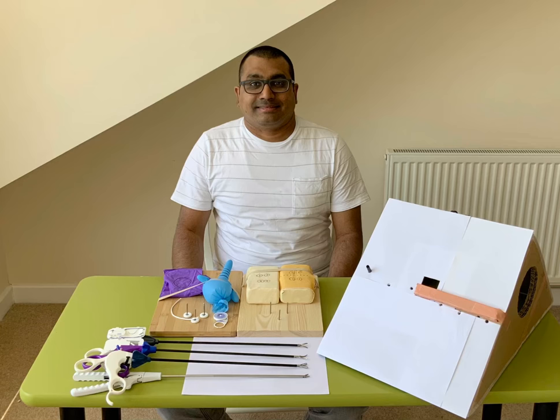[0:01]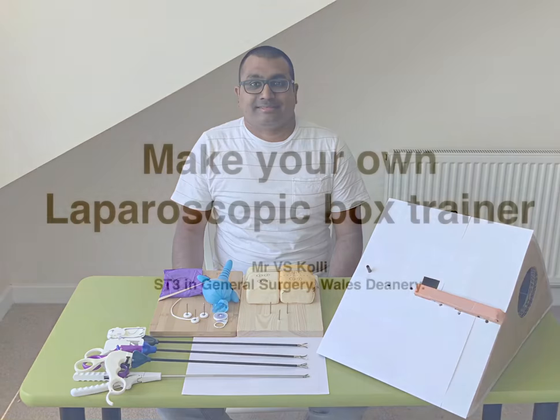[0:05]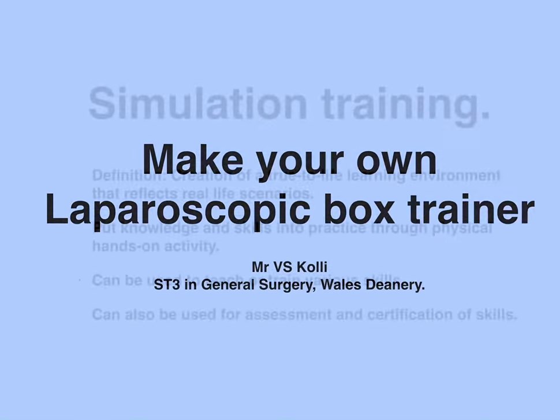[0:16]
Hi guys, my name is Satish Kole, one of the surgical registrars from Bangor in North Wales. Today I'm going to show you how to make your own laparoscopic box trainer from a cardboard box.
I would like to start with a brief introduction about simulation training. Simulation training can be defined as the creation of a true-to-life learning environment that reflects real-life scenarios. It gives trainees an opportunity to put their knowledge and skills into practice through physical hands-on activity. Simulation training can be used to learn new skills but also to improve on existing skills. It can also be used for the assessment and certification of skills acquired.
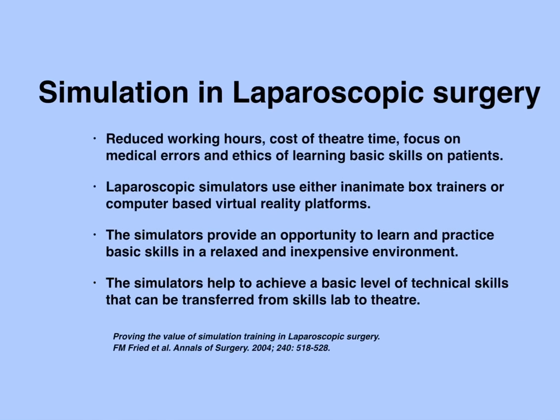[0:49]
Several factors led to the development of simulation in laparoscopic surgery. Reduced working hours, cost of theatre time, focus on medical errors, and the ethics of learning skills on patients are the most important factors. Laparoscopic simulators are essentially of two kinds. They either use inanimate box trainers or use computer-based virtual reality software. The simulators provide an opportunity for the trainees to learn and practice basic skills in a relaxed and inexpensive environment outside the operating room. They help the trainees achieve a basic level of technical skills that can then be transferred from the skills lab to the operating room.
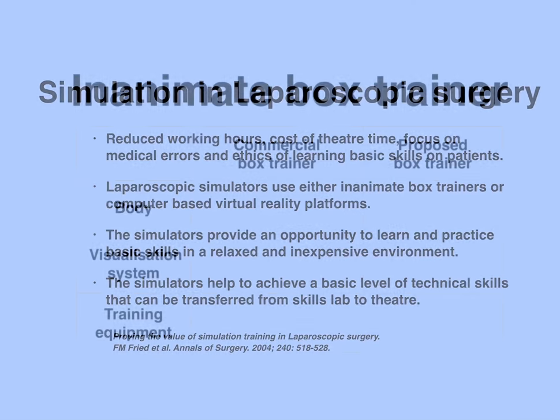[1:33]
An inanimate box trainer is essentially composed of three main parts: a body inside which various skills are practiced, a visualization system that captures images from inside the box and transfers to a monitor, and training equipment which includes laparoscopic instruments and other material.
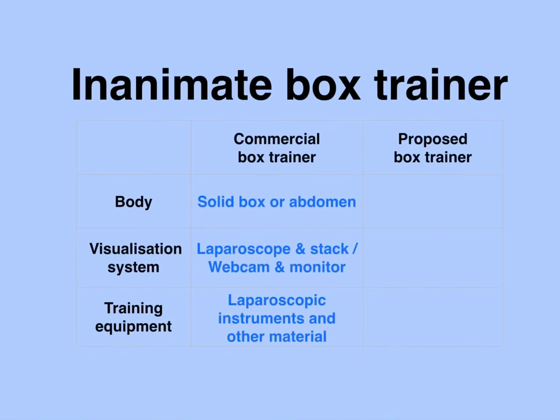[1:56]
Laparoscopic box trainers that are available on the market have a body of various shapes and sizes. Some have a solid box that looks like a cube, whilst others have a body that looks exactly like an abdomen, with a soft cover or anterior abdominal wall through which various ports can be inserted for practice. The visualization system can be composed of a laparoscope very similar to that used in theatres, along with a stack, whilst other trainers have a webcam that can then be connected to a monitor. The training equipment includes laparoscopic instruments and various other materials as is required for the skills being practiced.
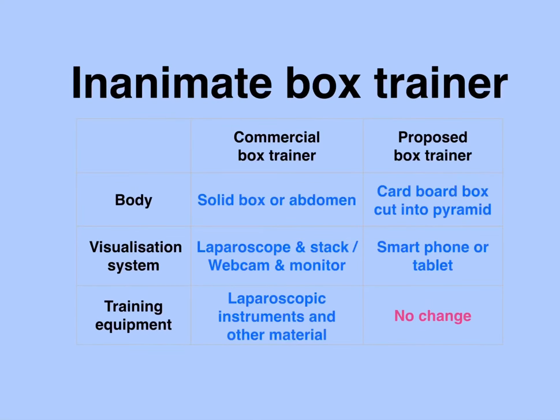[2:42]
The body of the laparoscopic box trainer that is being proposed in this video is essentially made of cardboard. A simple cardboard box is divided into two pyramids, one of which is shaped into a box trainer. A smartphone or a tablet acts as a visualization system and may be connected to a bigger screen through an HDMI cable or through Wi-Fi. There is no change in the training equipment required, and it essentially includes all the laparoscopic instruments and other materials that are required for the various skills.
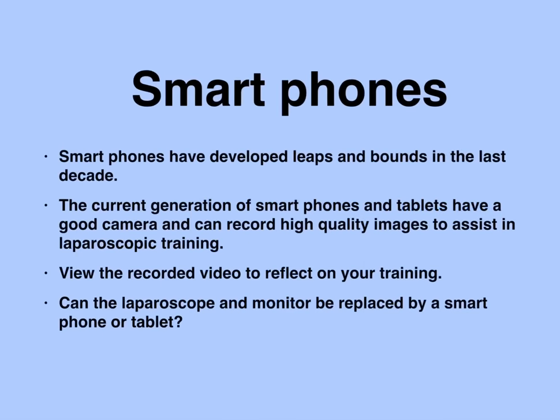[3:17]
Smartphones have developed leaps and bounds in the last decade or so. The current generation of smartphones and tablets have a high-definition camera capable of recording good quality images and videos. Trainees can record videos of their practice and then review those videos to reflect on their training. So essentially, smartphones can replace all visualization systems currently used in commercial box trainers.
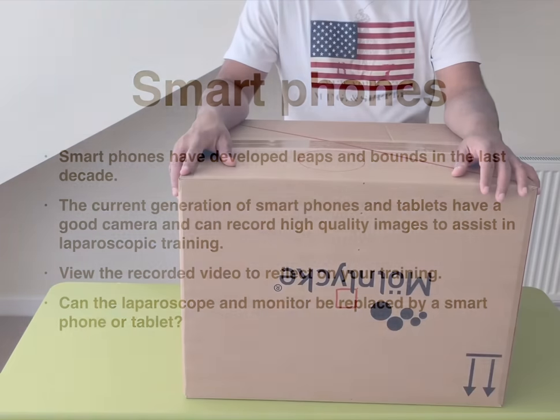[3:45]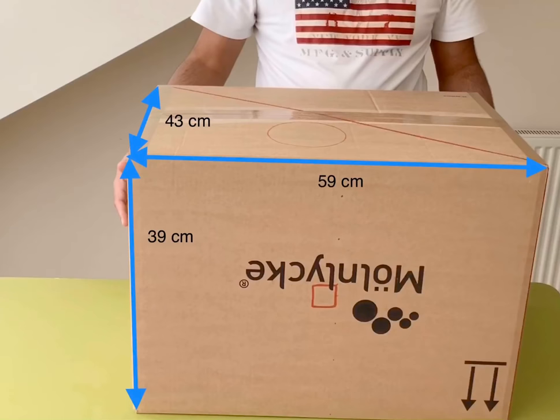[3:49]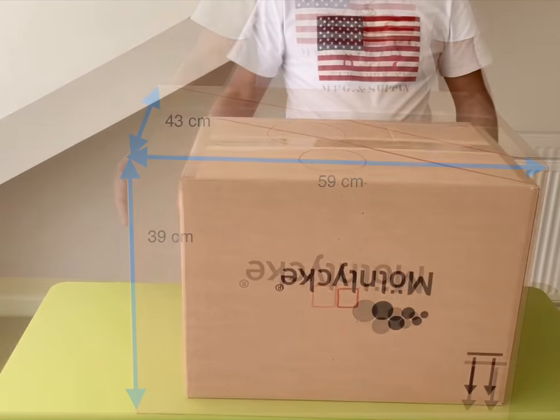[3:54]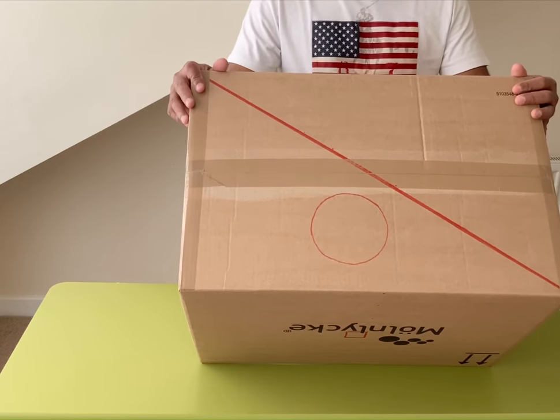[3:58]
So let's crack on, guys. I've got a thick cardboard box here measuring 59 by 43 by 39 centimeters, and we are going to cut this box along the red lines into two pyramids.
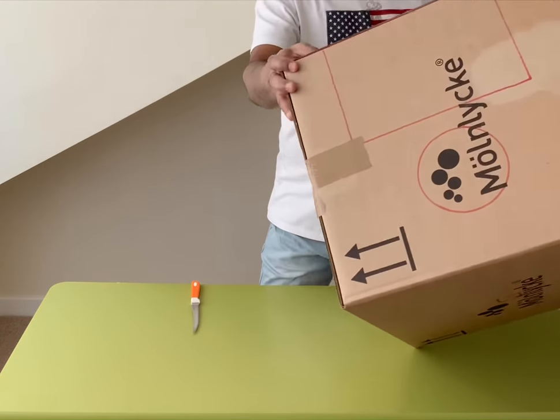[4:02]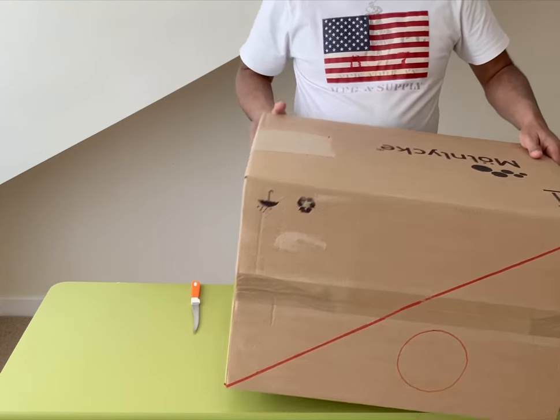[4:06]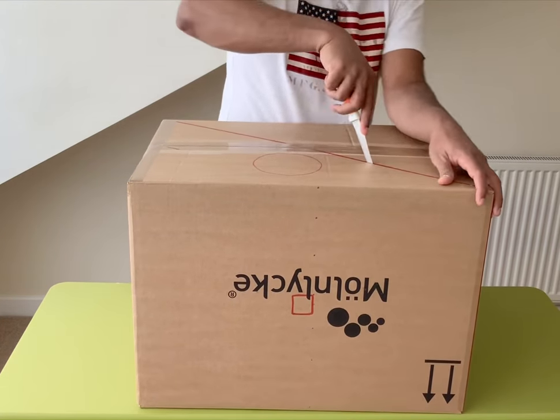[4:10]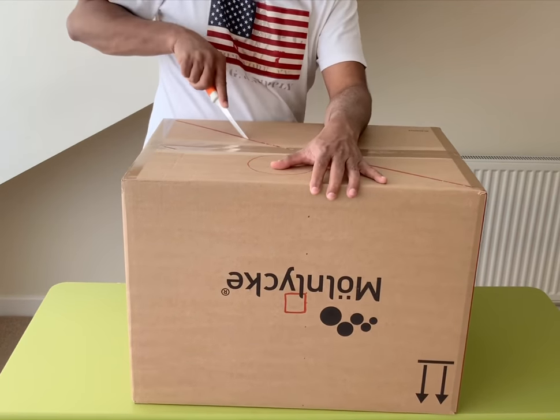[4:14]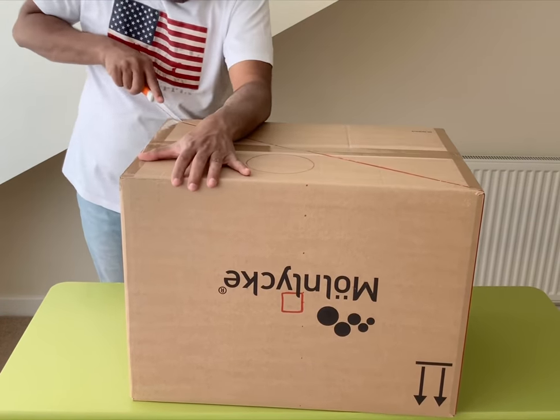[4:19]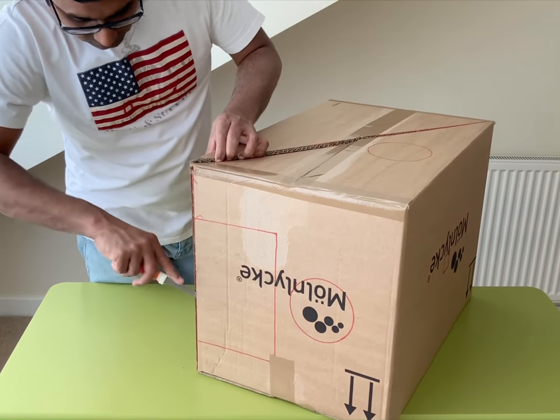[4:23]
Just a word of caution, guys, we're going to use a very sharp knife here to cut the cardboard box, and at places it is quite difficult to cut it, so please be careful and don't hurt yourself. And if you have any children in the household, make sure they're well away from you.
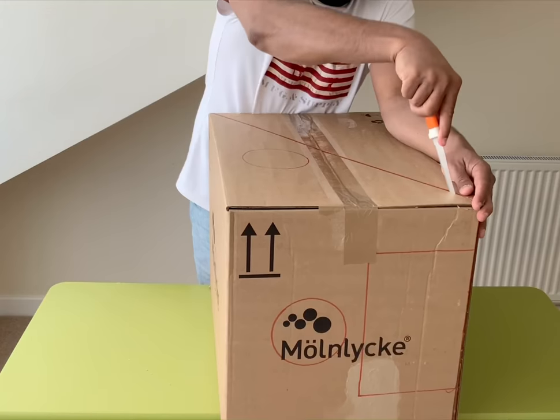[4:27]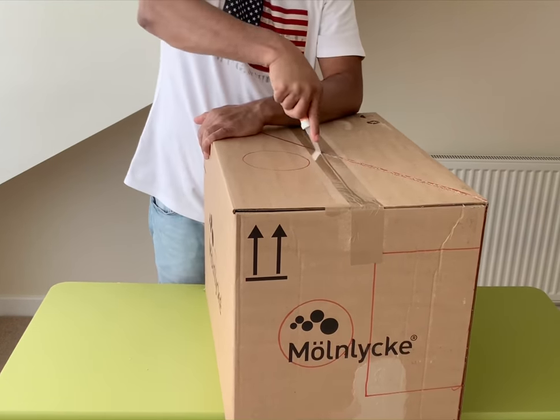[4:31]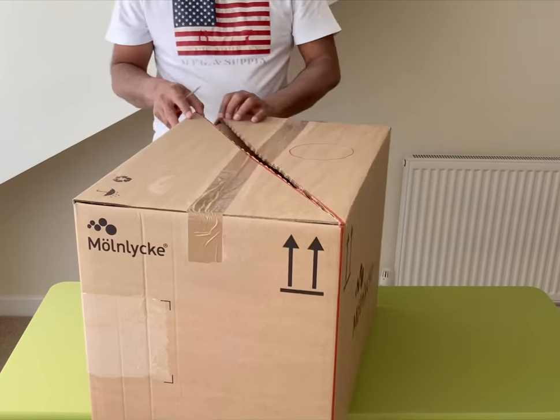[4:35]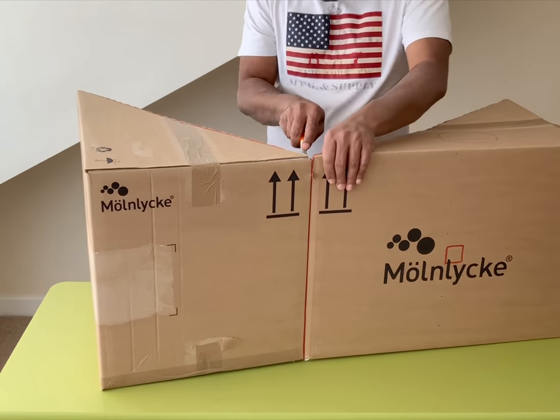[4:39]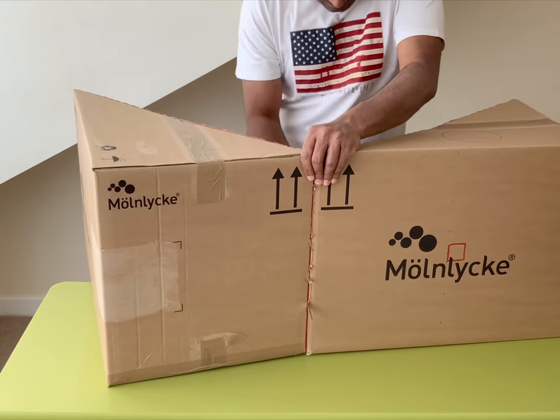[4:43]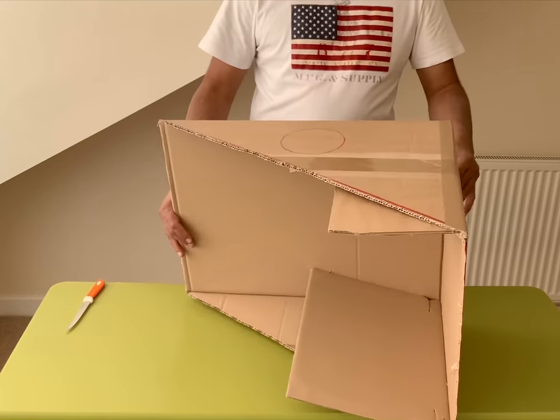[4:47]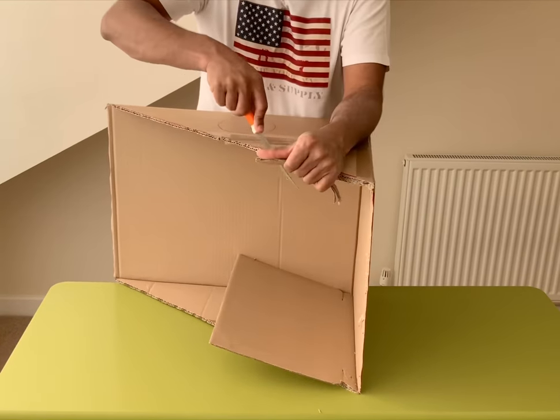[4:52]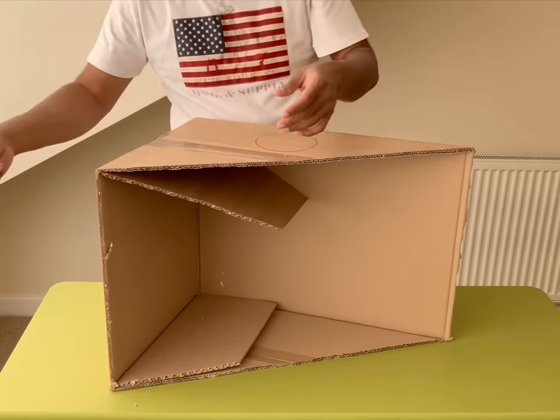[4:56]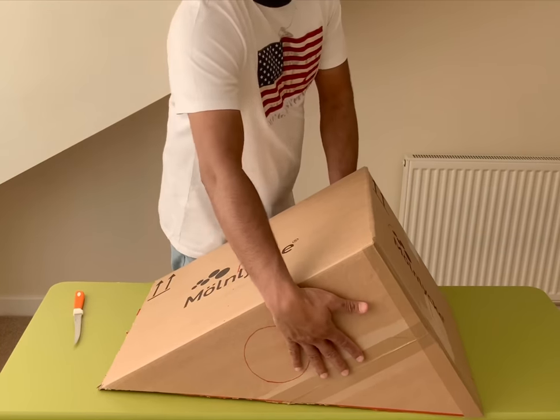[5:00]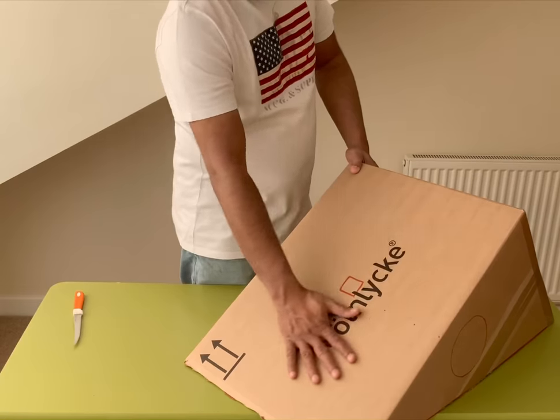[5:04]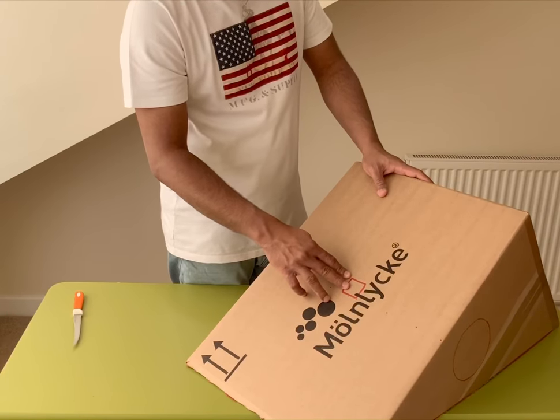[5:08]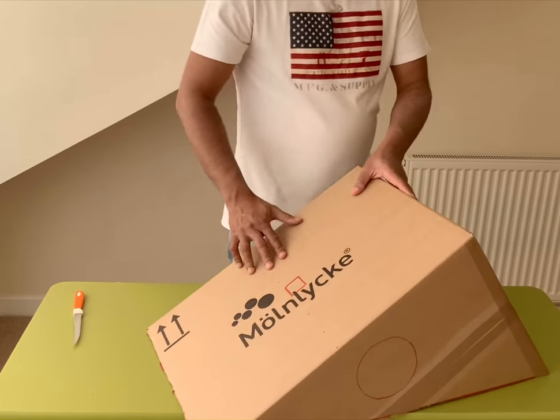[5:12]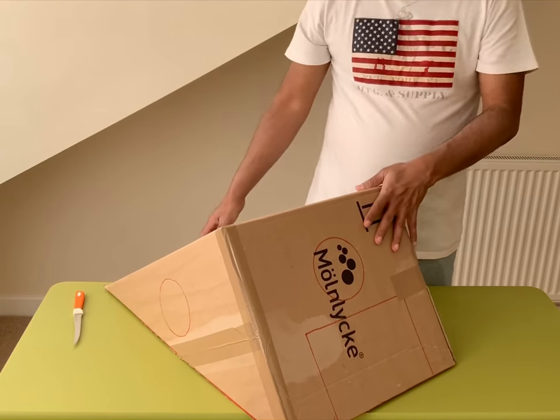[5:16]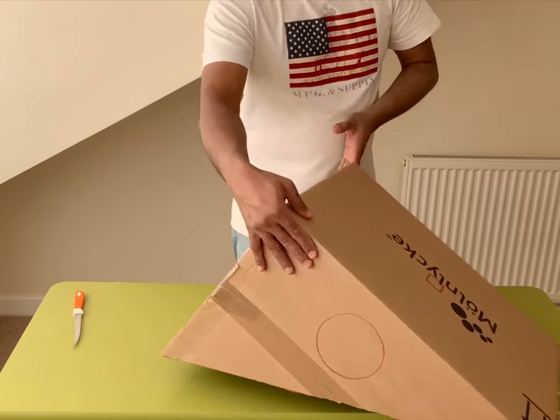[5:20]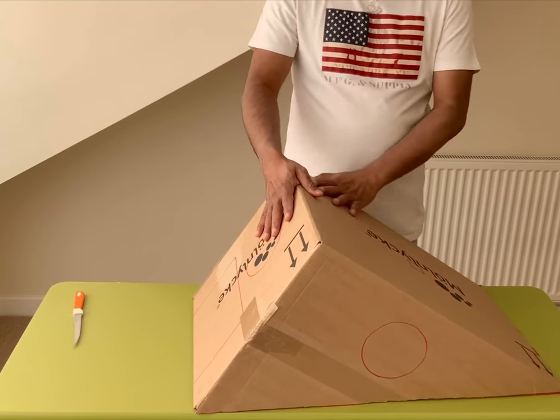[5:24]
We'll end up with a pyramid like this, with two surfaces forming the roof and two sides. One of the surfaces forming the roof we are going to use as a work surface, and we'll cut out a window to slot in the camera of a smartphone or an iPad or a tablet. On the other surface of the roof, we'll cut out windows for light entry. We'll also cut out windows on the sides for light entry, but also to use our hands to maneuver objects inside the box.
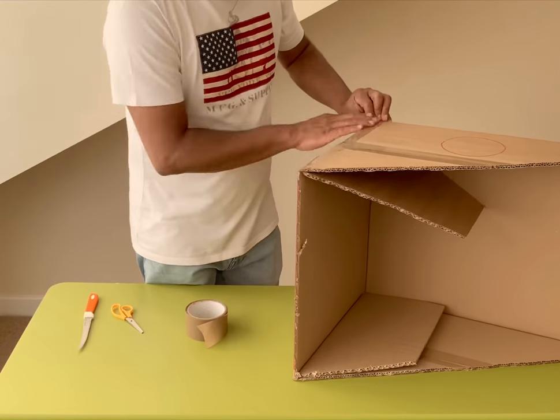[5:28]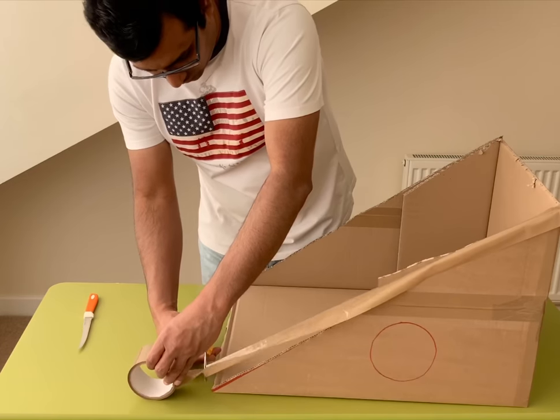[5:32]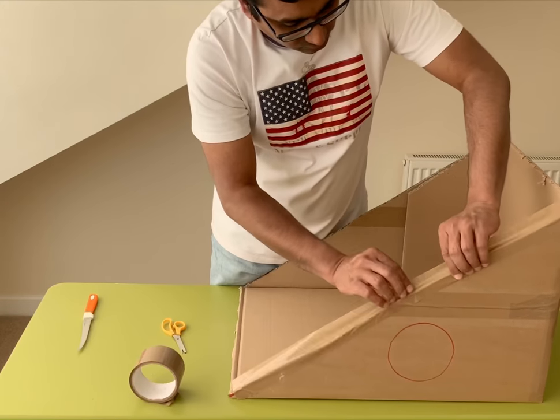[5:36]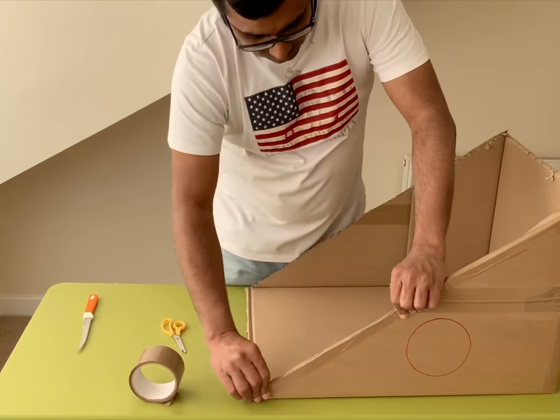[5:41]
I'm securing all the loose ends of the box and also the base of the pyramid with the tape so that the box is stronger and stable.
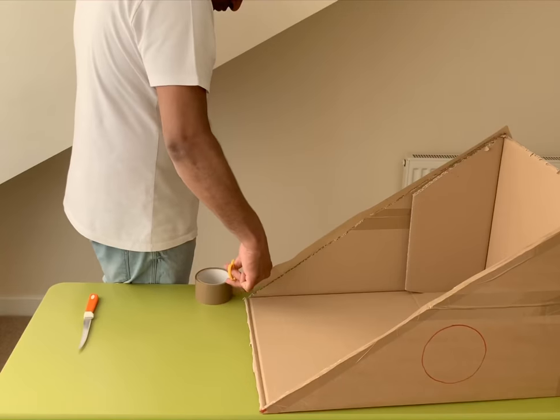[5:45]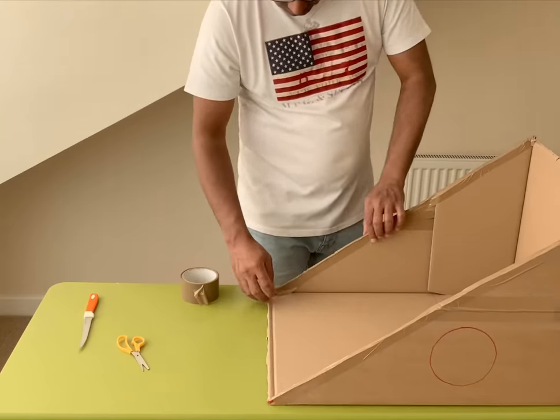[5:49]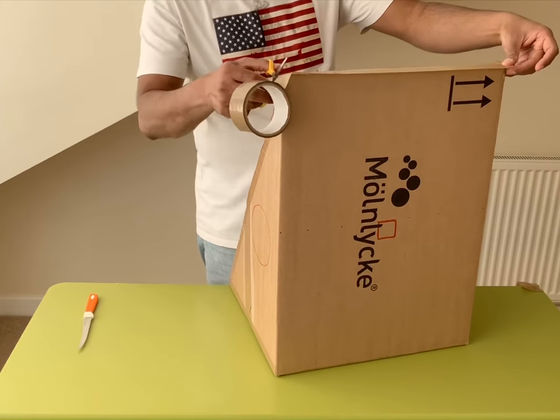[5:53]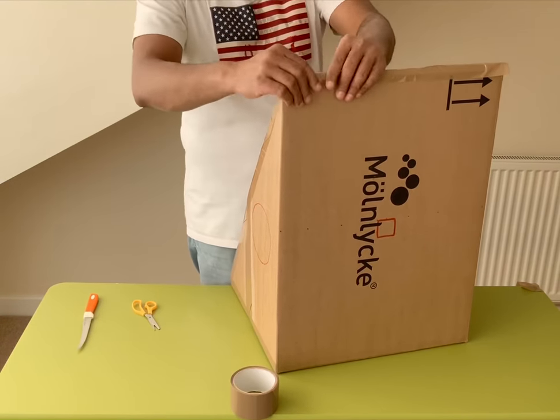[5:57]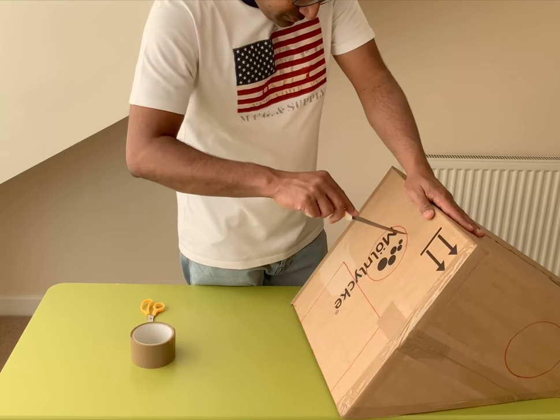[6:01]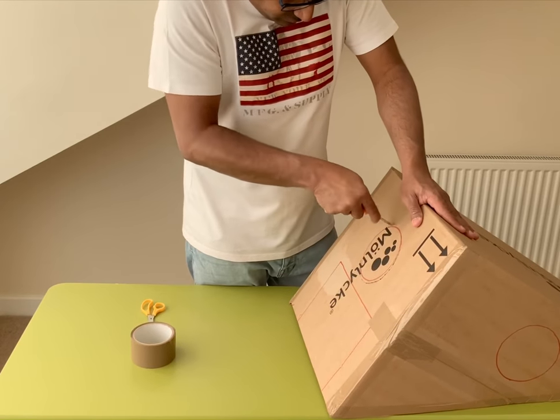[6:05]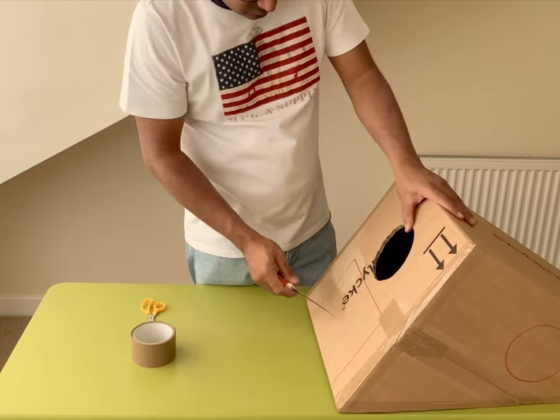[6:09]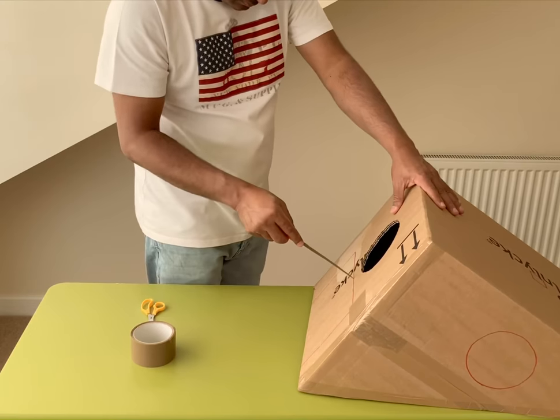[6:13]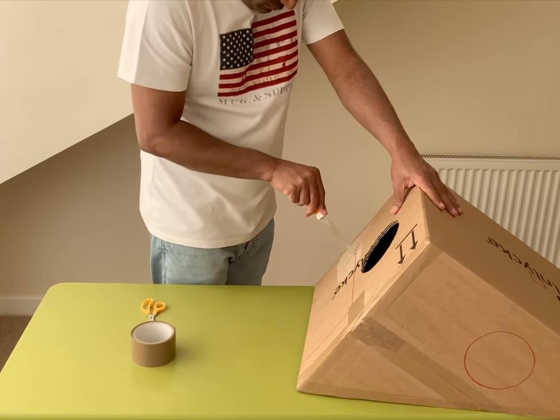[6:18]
If you are wondering as to why I have cut a round window followed by a rectangular window, please be patient. It will be obvious by the end of the video.
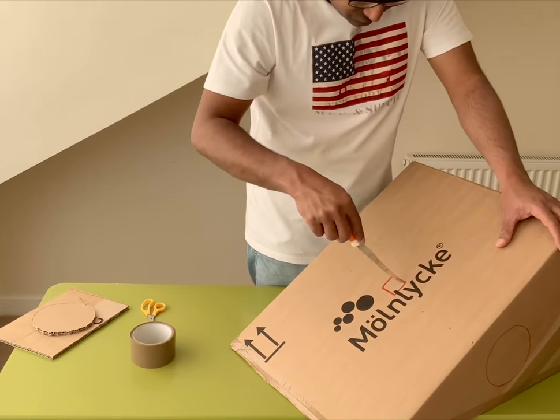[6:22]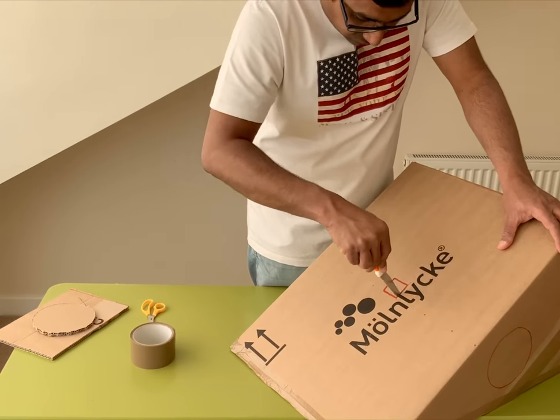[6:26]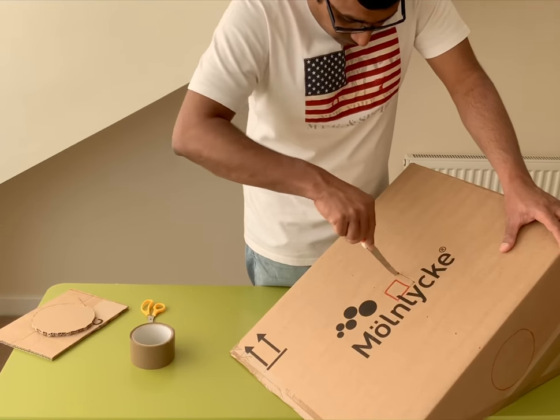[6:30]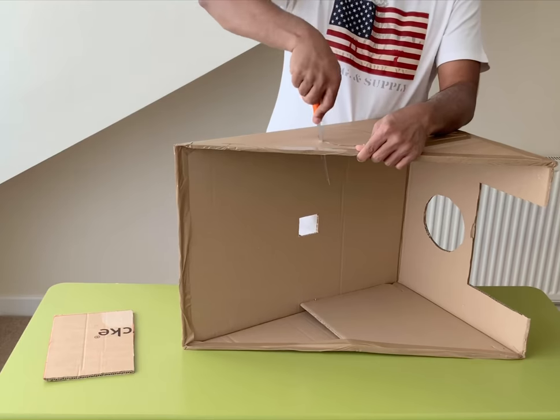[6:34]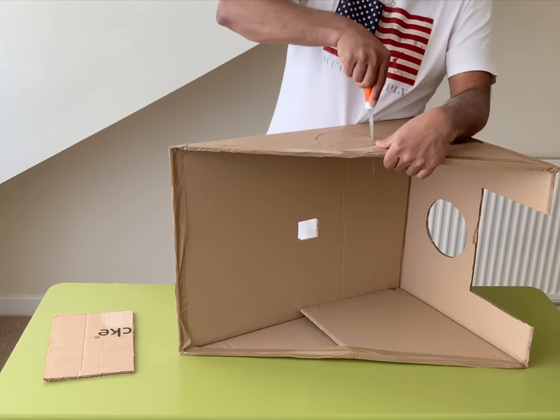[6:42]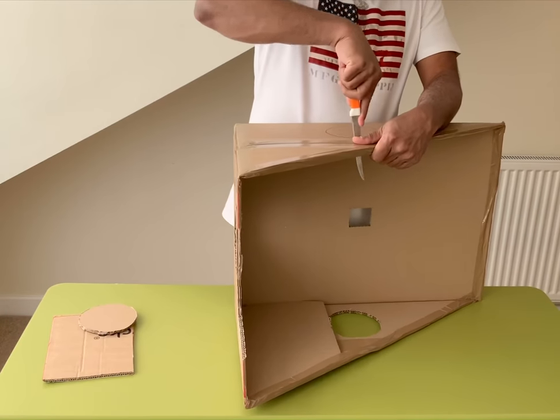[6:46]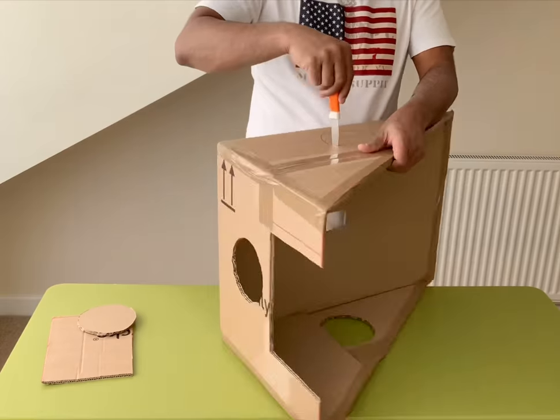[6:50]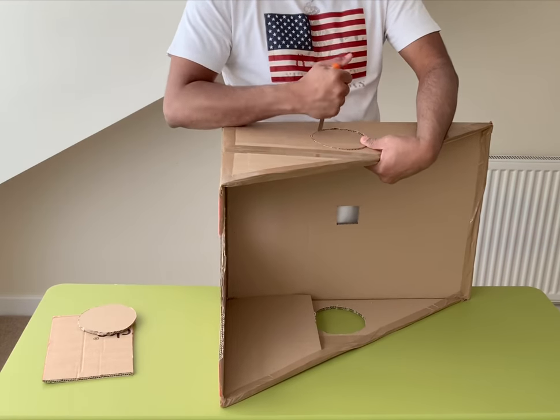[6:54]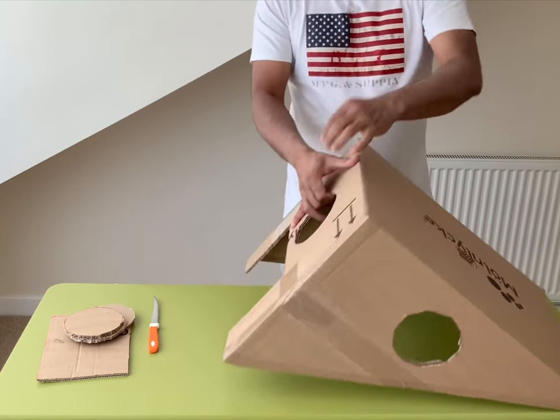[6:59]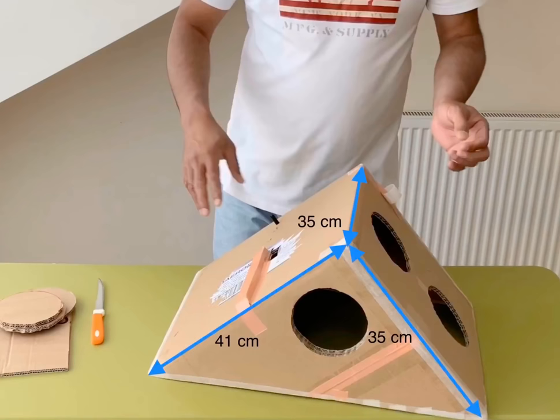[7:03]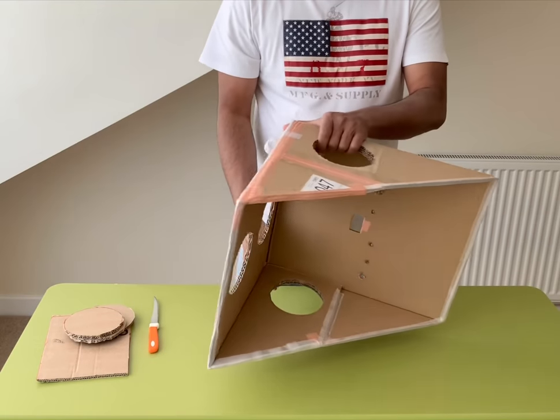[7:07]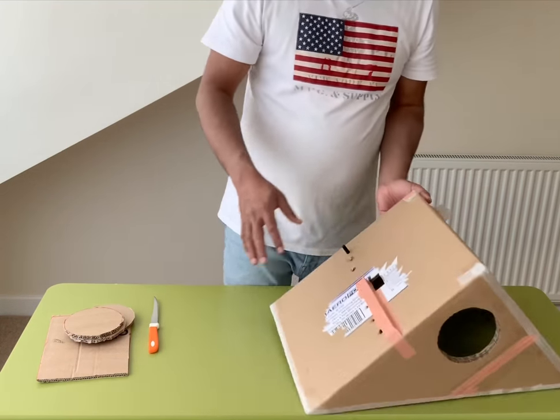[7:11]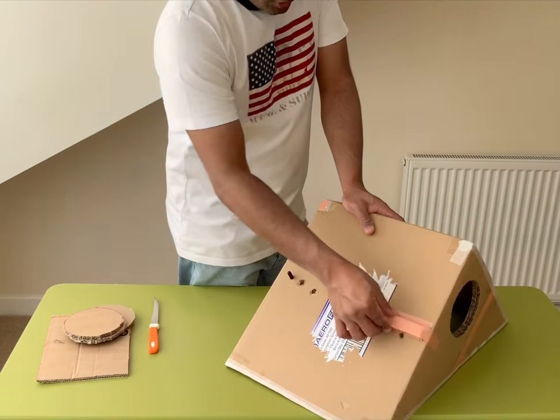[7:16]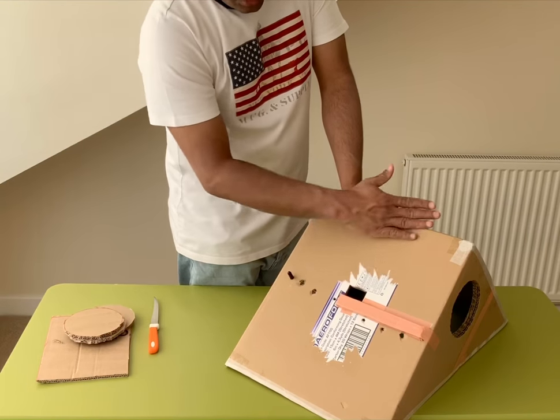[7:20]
We've ended up with a reasonably big box trainer because I've chosen a big box for a demonstration today. As you can see, the base of the pyramid is hollow. This is a slightly smaller box trainer that I've been using for the past few months. I have fixed a small horizontal piece of cardboard such that a smartphone or a tablet can rest against it.
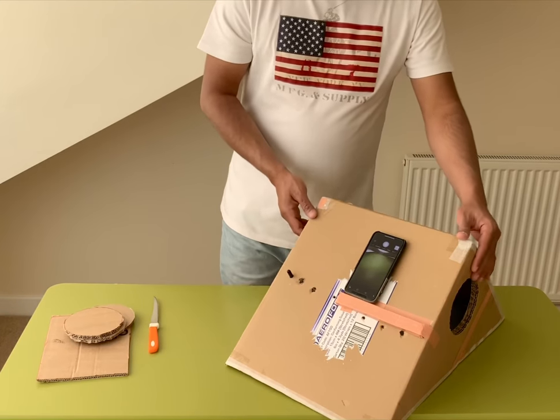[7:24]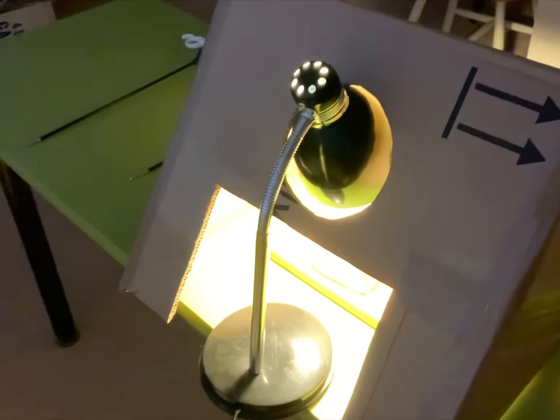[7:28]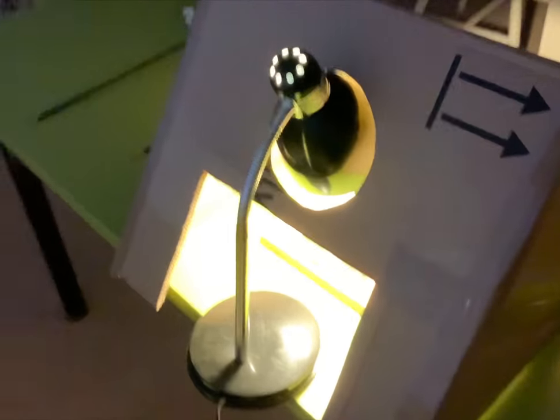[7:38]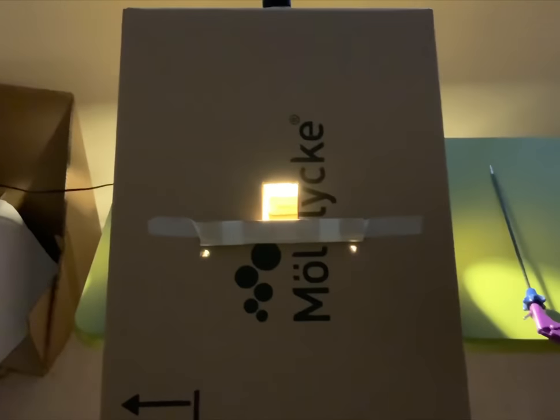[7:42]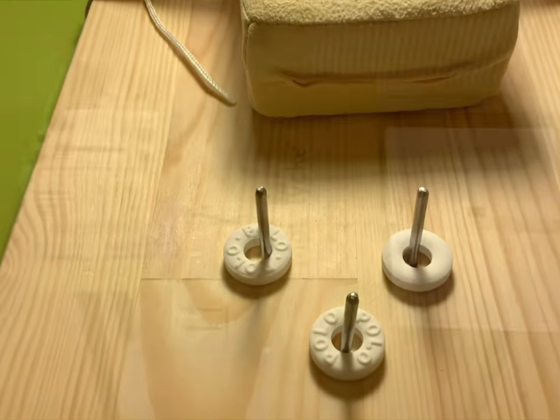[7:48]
Just to show you the setup of the box trainer at night, guys, the round window was cut out such that it would fit the head of a table lamp and I can practice at night as well. On the other surface, we are going to place a smartphone or an iPad such that the interior of the box can be visualized through the window.
The picture here shows three box trainers. The one to the left is one of the first box trainers I have used. The other two pyramidal box trainers have been shown in the video earlier. For the pyramidal box trainer, the window for the camera of a smartphone or a tablet is made right in the center of the surface, measuring about 5 by 5 centimeters. Two portholes are made about 18 to 20 centimeters apart on a horizontal line below the window, with the window exactly midway between the two portholes. We will discuss the distance between the two portholes in more detail in a minute.
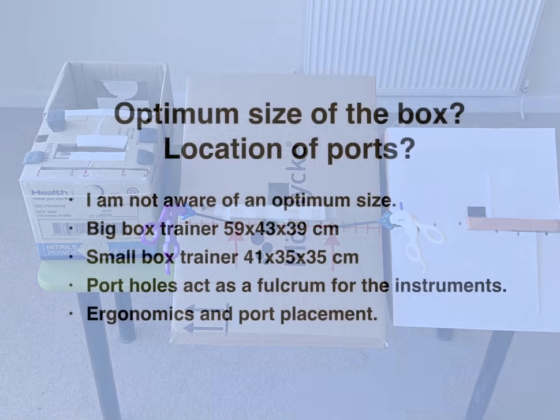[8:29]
With regards to the size of the box, I am not aware of an optimum size. The size of the boxes that I have used to create the pyramidal box trainers shown earlier in the video are 59 by 43 by 39 centimeters for the big box and 41 by 35 by 35 centimeters for the small box. In a box trainer, the portholes act as a fulcrum for the instruments.
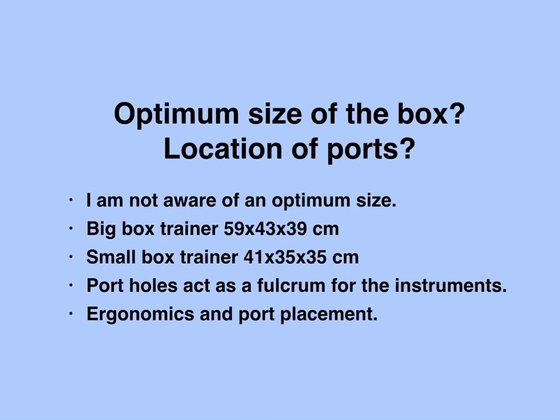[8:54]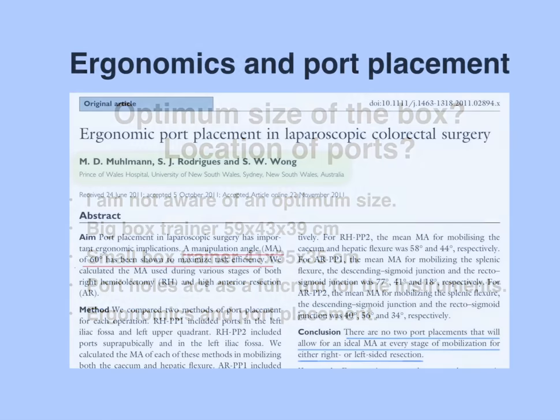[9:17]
The position of the ports, the distance between the portholes, and the distance between the portholes and the target play a crucial role in determining the manipulation angle and the efficiency of performing a given task. These factors are discussed under the term ergonomics of port placement. So I did a PubMed search with the terms ergonomics and port placement. One of the articles from the search that I liked was published from Australia by Muhlmann et al.
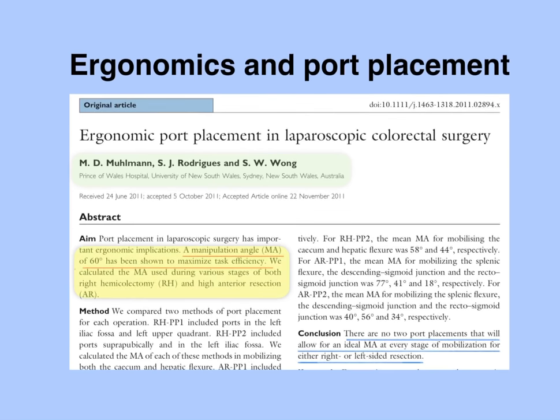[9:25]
These guys calculated the manipulation angle used at various stages of both right hemicolectomy and high anterior resection. Manipulation angle is the angle between the tips of the left and right hand instruments when they converge at the target. A manipulation angle of 60 degrees is considered ideal. This study concluded that there are no two port placements that would allow for an ideal manipulation angle at every stage of mobilization for either the left or right sided resection.
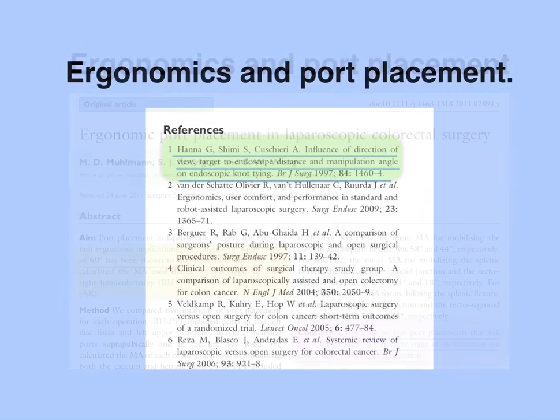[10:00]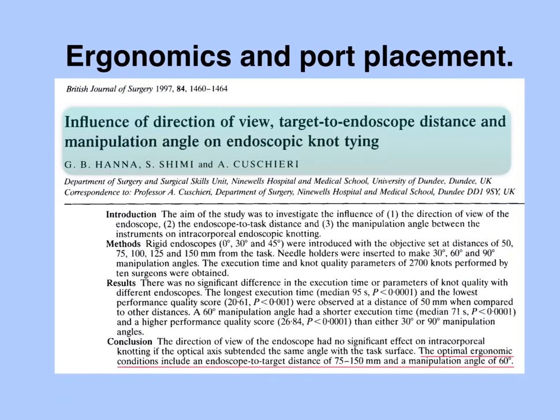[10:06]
I wanted to know a bit more about this manipulation angle of 60 degrees and where it came from, so I looked at the references. The first in the reference section is an article published in the British Journal of Surgery in 1997 by Hanna, Shimi and Cuschieri, investigating the influence of direction of view, target to endoscope distance and manipulation angle on the efficiency of endoscopic knot tying performed by 10 different surgeons.
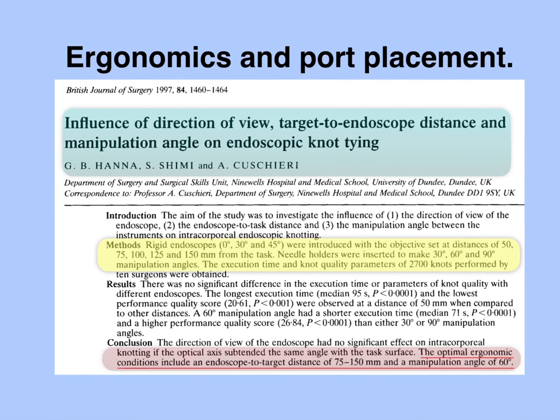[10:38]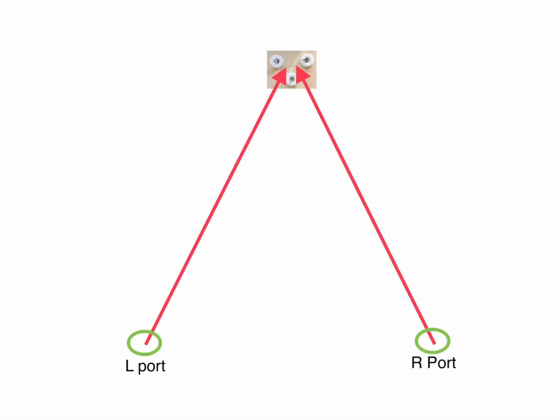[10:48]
Three rigid endoscopes, 0 degree, 30 degree and 45 degrees, were introduced at distances ranging from 5 to 15 centimeters from the task. Needle holders were inserted to make 30 degree, 60 degree and 90 degree manipulation angles. The study concluded that the optimal manipulation angle is 60 degrees and the optimal endoscope to task distance is 7.5 to 15 centimeters. I want to use these two numbers, a manipulation angle of 60 degrees and a camera to target distance of 7.5 to 15 centimeters in my box trainer to maximize my training.
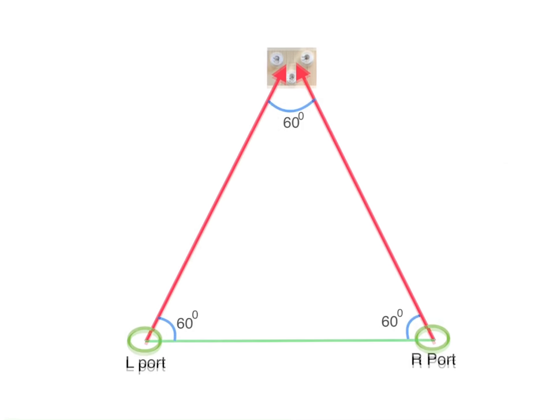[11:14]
Let me explain with the help of a diagram. Assume the two red lines represent two laparoscopic instruments inserted into the box through the left and right ports converging at the target of the polo mints. If the lengths of the two instruments inserted into the box are equal to each other and are also equal to the distance between the two portholes, an equilateral triangle is formed, making all the three angles, including the manipulation angle, equal to 60 degrees.
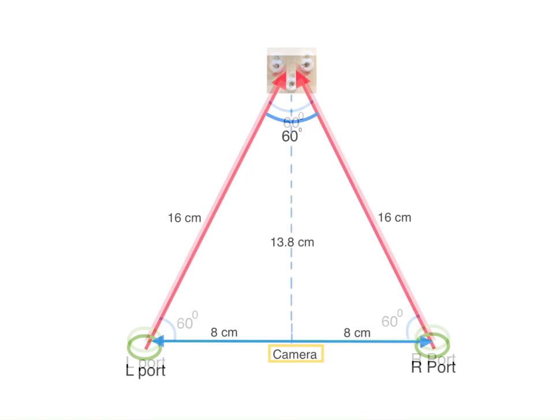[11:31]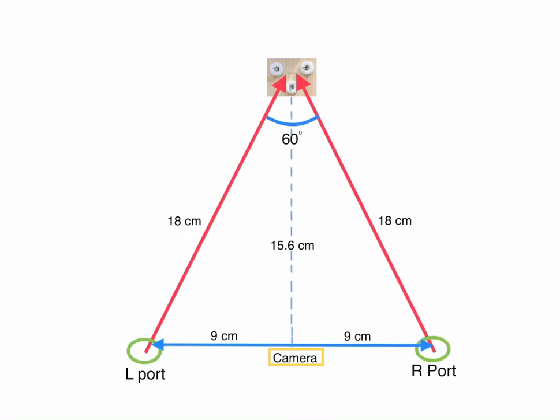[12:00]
If the distance between the two portholes is 16 centimeters, with the camera located exactly midway between the two portholes, and the lengths of both laparoscopic instruments inserted into the box are also 16 centimeters, an equilateral triangle is formed again with a manipulation angle of 60 degrees. The camera to target distance is calculated as 13.8 centimeters by the Pythagoras principle for a right angle triangle. An equilateral triangle of 18 centimeters would still give you a manipulation angle of 60 degrees with a camera to target distance of 15.6 centimeters.
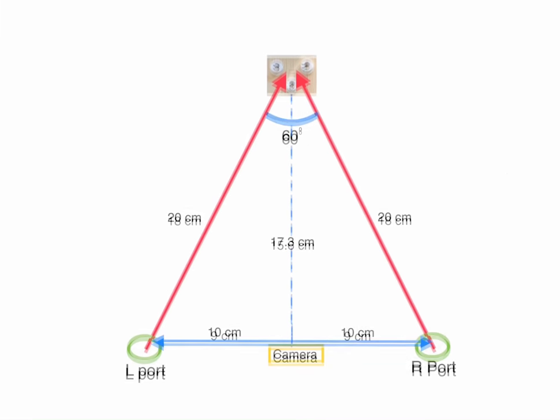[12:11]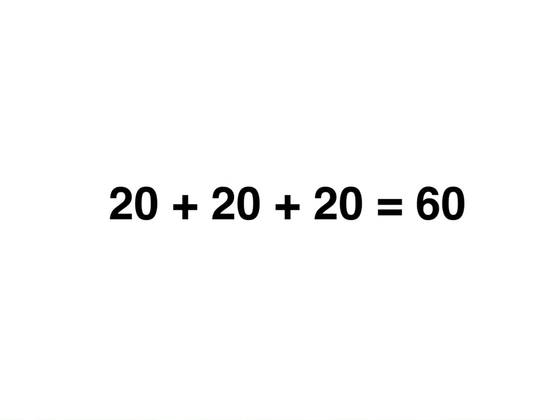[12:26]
An equilateral triangle of 20 centimeters would still give you a manipulation angle of 60 degrees but would increase the camera to target distance to 17.3 centimeters. I would suggest you remember and use 20 centimeters in your box trainer simply because it is easy to remember that 20 plus 20 plus 20 equals 60. What I mean to say is that 20 centimeter lengths of the left and right hand instruments inserted into the box trainer and 20 centimeter distance between the portholes would form an ideal manipulation angle of 60 degrees.
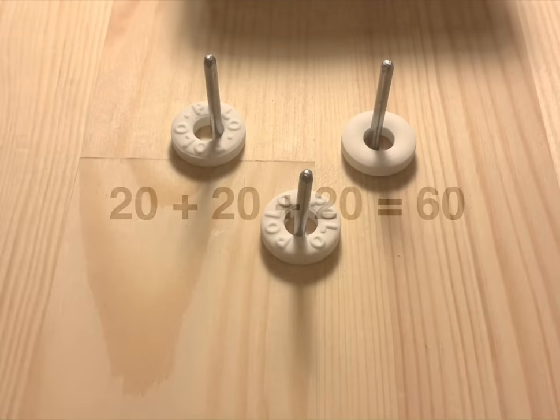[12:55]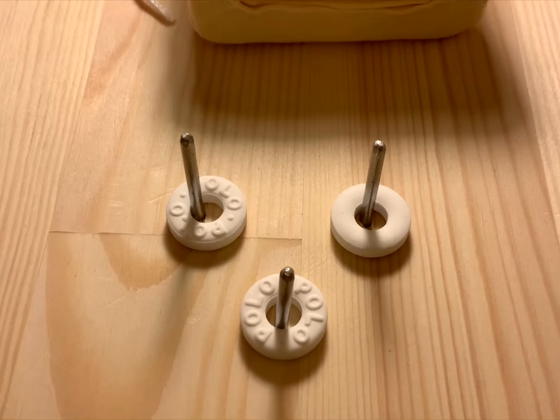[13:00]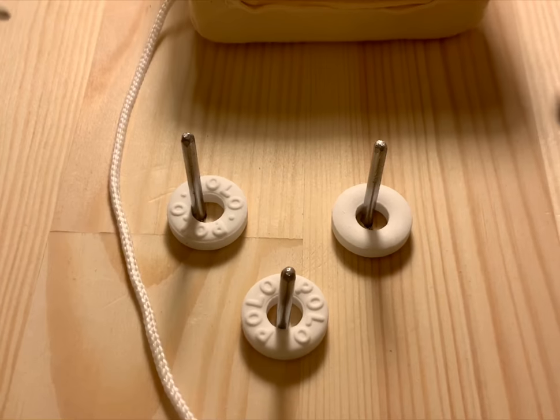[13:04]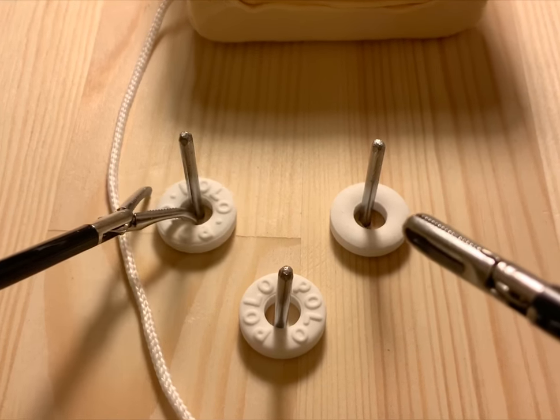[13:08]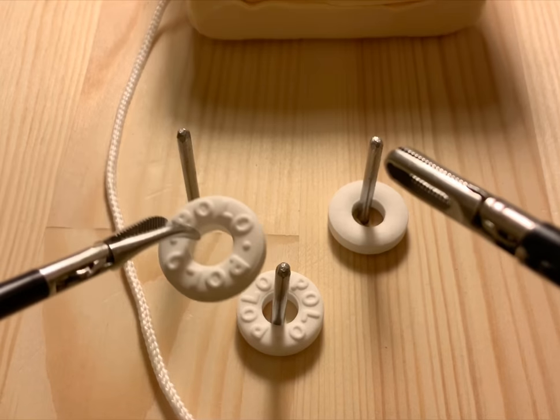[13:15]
I have used my hands through the side window to adjust the training equipment inside the box to my liking. All the video clips used in my other video titled Lap Pass and Introduction have been recorded using this cardboard box trainer and an iPad Pro.
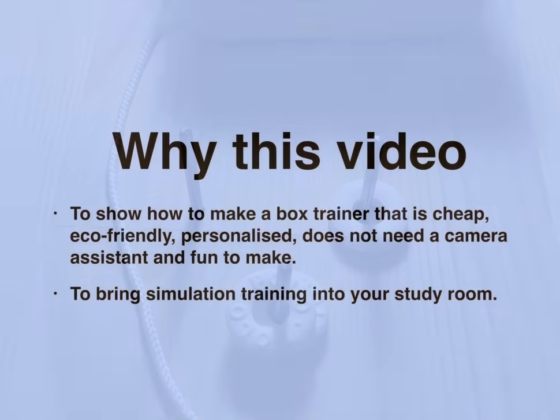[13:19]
The main purpose of this video is to show you how to make a box trainer that is cheap, eco-friendly, personalized, that doesn't need a camera assistant and most importantly fun to make. And I hope that this box trainer will bring simulation training into your study room.